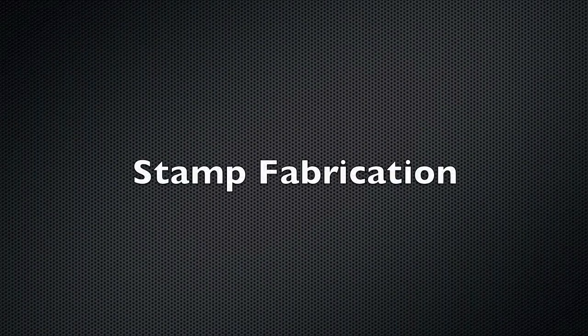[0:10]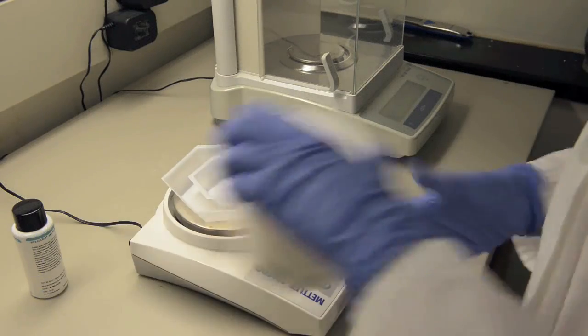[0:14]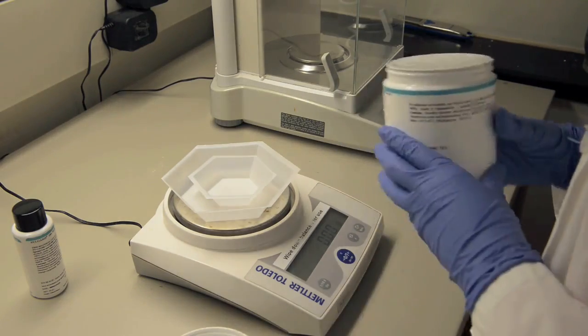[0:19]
Stamp fabrication. Make up PDMS in a 10 to 1 mass ratio of silicon base to curing agent by weighing it in a large weighboat on a digital scale.
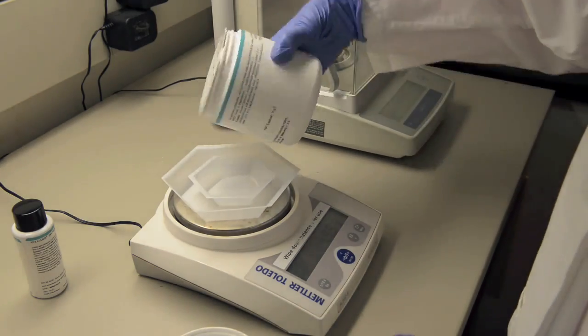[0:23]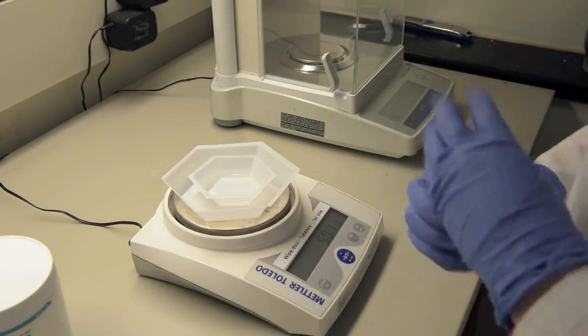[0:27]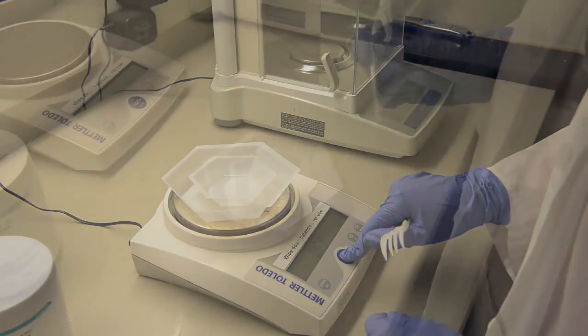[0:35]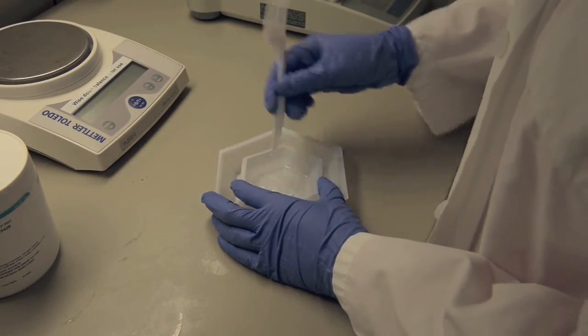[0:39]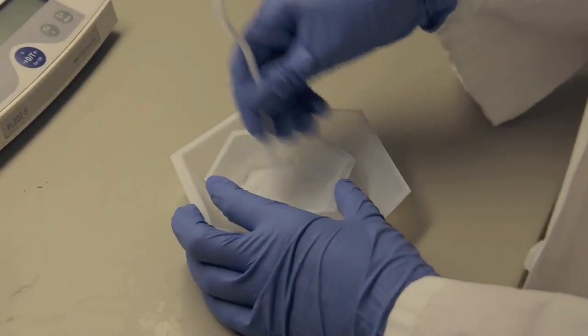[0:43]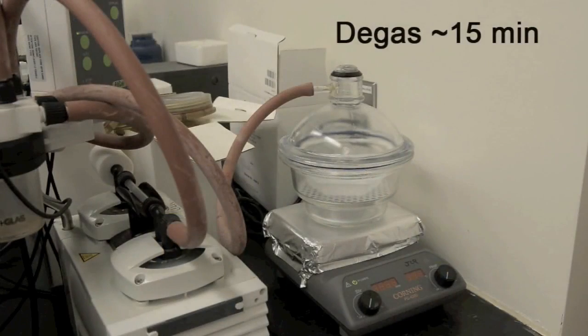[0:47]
Thoroughly stir the mixture until it is filled with bubbles. Then, place the mixture into a vacuum chamber and degas under vacuum for 15 minutes or until all bubbles have disappeared.
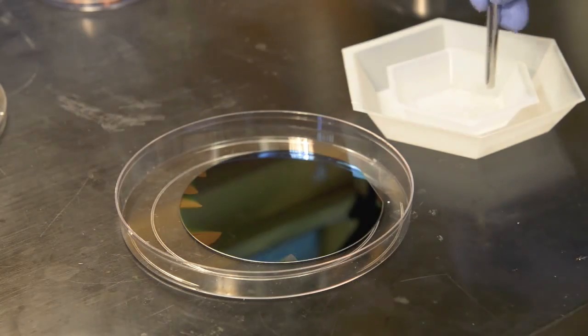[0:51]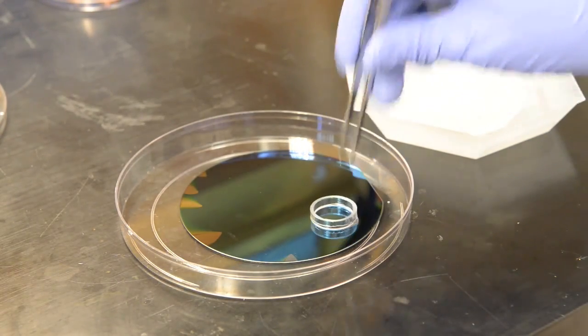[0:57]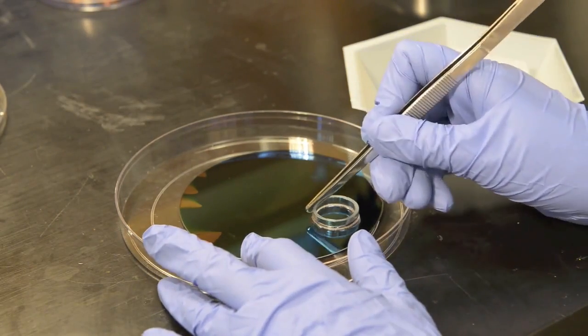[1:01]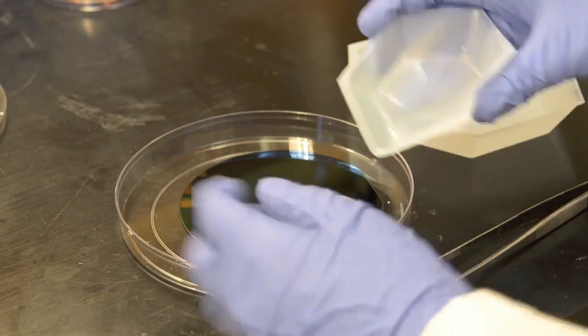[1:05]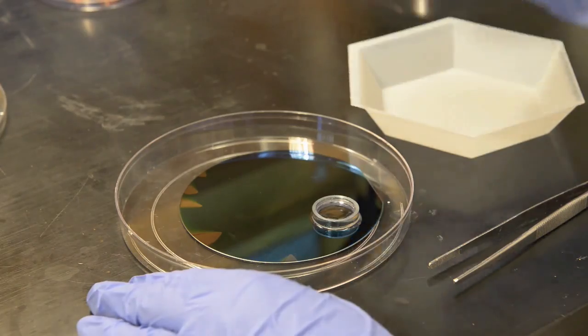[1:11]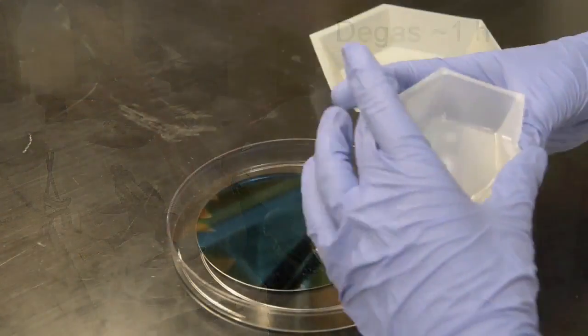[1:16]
Dip a plastic ring into the degassed PDMS to just wet the bottom and apply it with proper positioning onto the silicon master pattern. Fill the ring with PDMS and return the assembly to the vacuum chamber to degas for 1 hour. Top the ring up with PDMS.
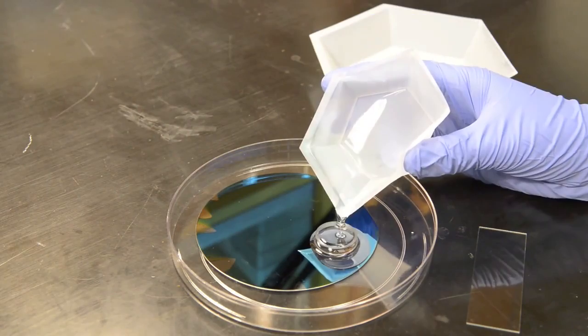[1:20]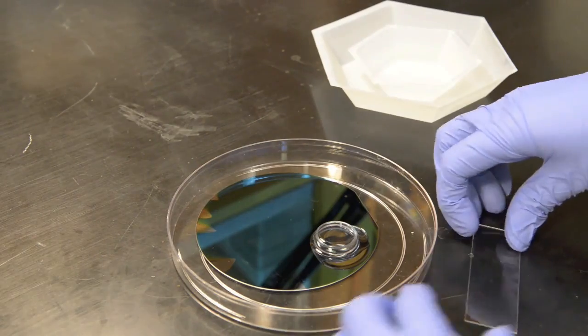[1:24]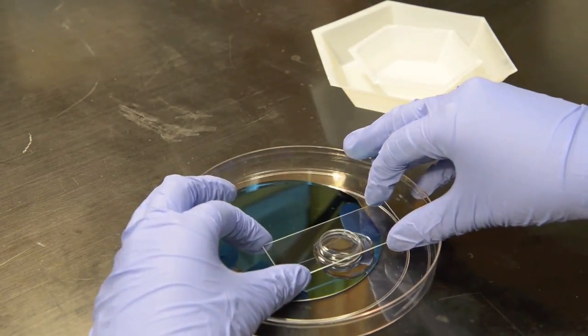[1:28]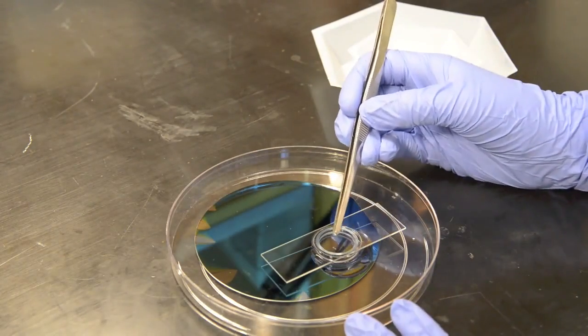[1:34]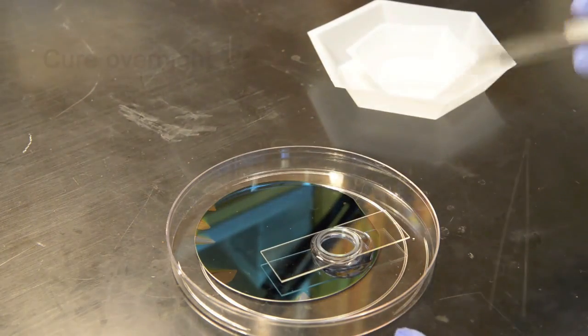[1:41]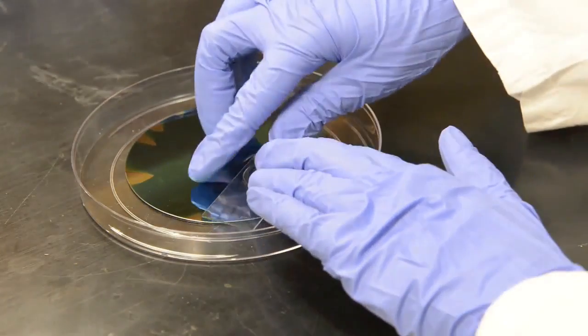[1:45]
Apply a clean glass slide as the backing to the stamp. Be sure not to incorporate any air bubbles. Final positioning adjustments can be made at this time. Cure the assembly overnight on a flat surface.
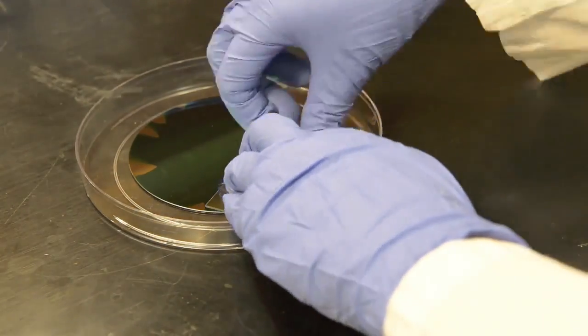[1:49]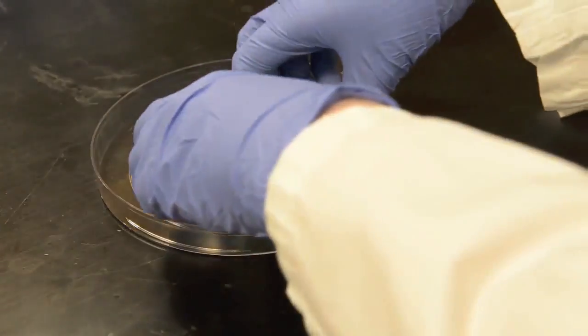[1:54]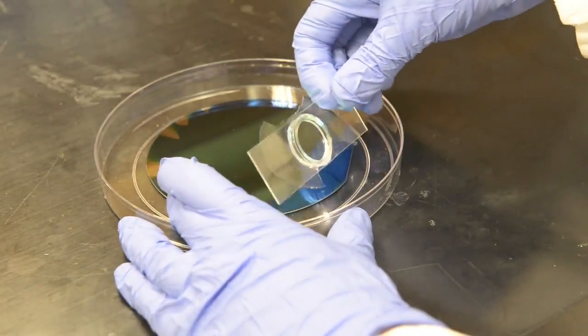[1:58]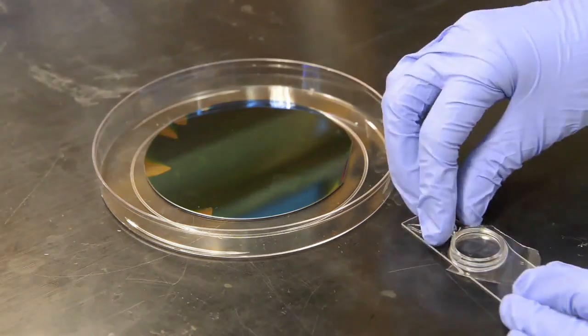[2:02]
Once cured, carefully peel the excess PDMS from the wafer. Remove the stamp and be careful not to scratch the patterned area on the wafer. Using a razor blade, cut the PDMS around the ring to release the stamp.
Apply pressure to peel the ring from the glass slide backing. Push the stamp out of the ring. Remember to leave the patterned surface of the stamp untouched.
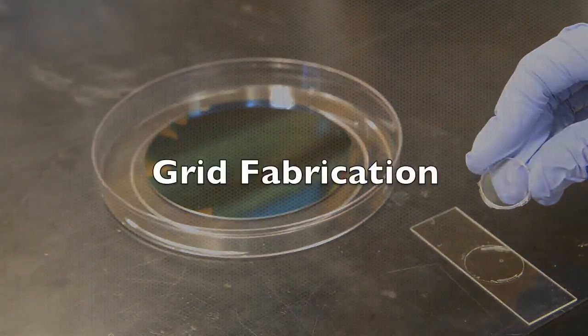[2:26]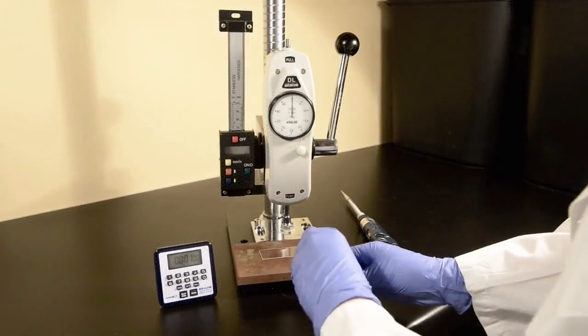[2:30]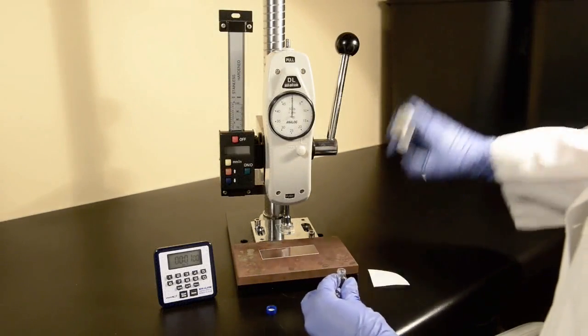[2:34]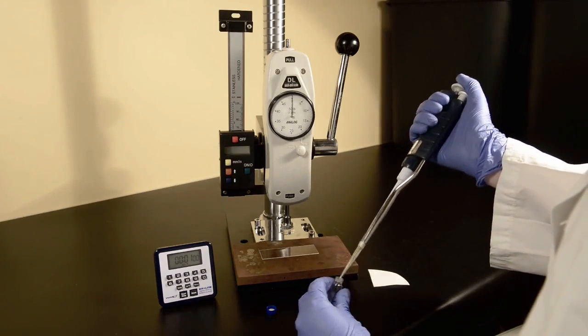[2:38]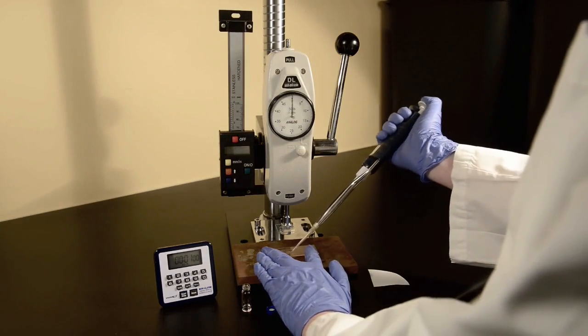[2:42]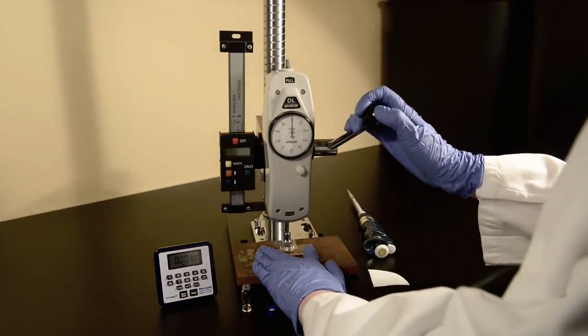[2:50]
Grid fabrication. Pipette and spread approximately 50 microliters of 1% formvar solution onto a glass slide that has been cleaned with ethanol and wiped dry with a Kim wipe. Spread over a circular area equivalent to the stamp surface.
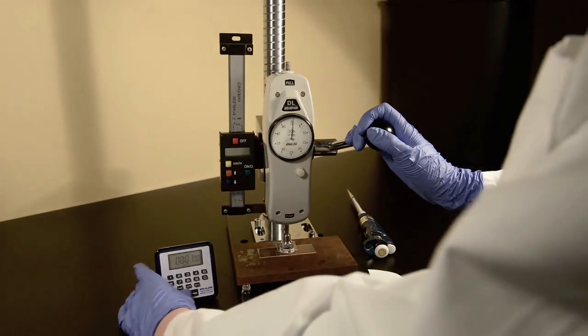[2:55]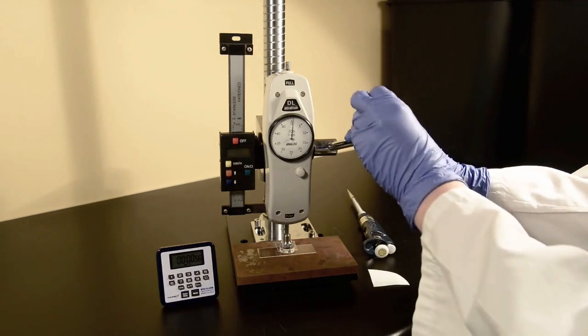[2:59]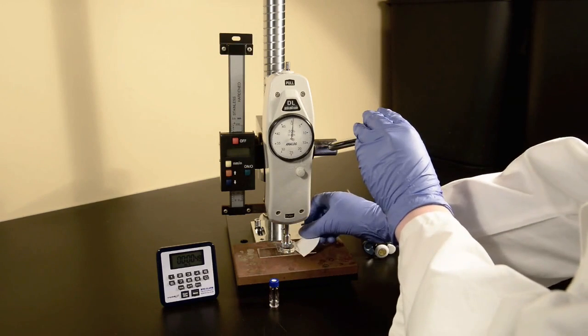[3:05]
Using the hand press, apply 0.5 to 1 pound of force for about 1 minute. Make sure to apply the stamp immediately after spreading the formvar on the glass, as the solvent will start evaporating right away. Dab away any excess plastic solution with filter paper.
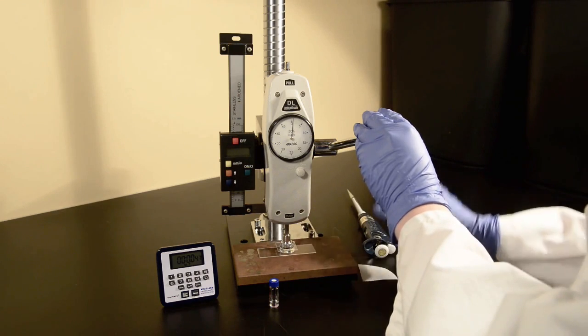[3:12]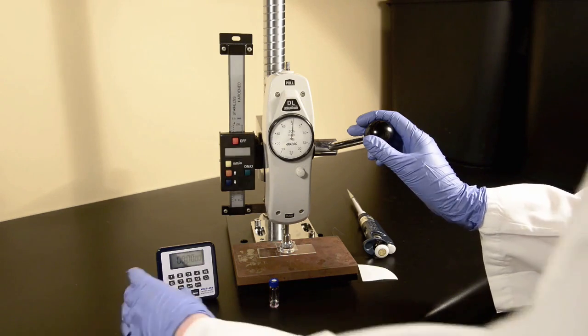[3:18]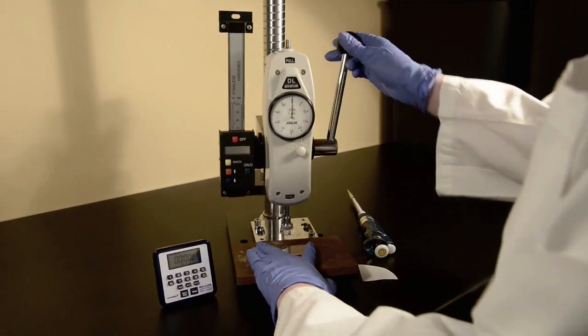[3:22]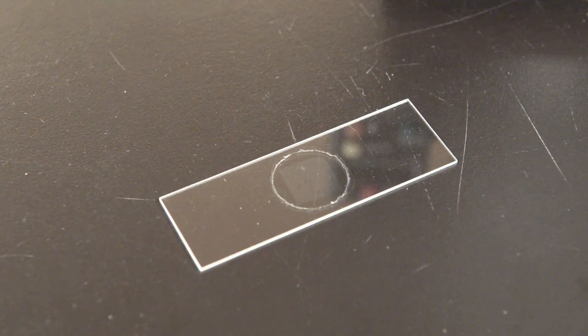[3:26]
Ensure the glass slide is secured while releasing the stamp to minimize smudging of the pattern. Inspect the full area of the formvar pattern using a light microscope. Check for pattern smudging or irregularities. Holes should be uniform and distinct across the majority of the pattern, as seen there.
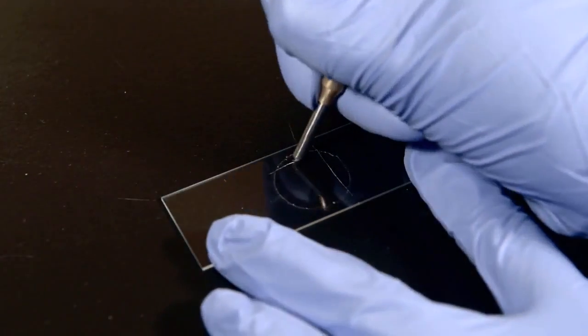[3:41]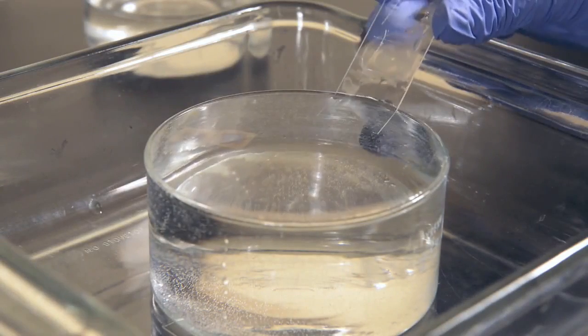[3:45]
If the pattern film is good, score the edges of the patterned area. Breathe onto the glass slide and float the film onto the surface of water in a glass crystallization dish. Repeat this whole process as necessary until there are enough high-quality formvar films on the water surface.
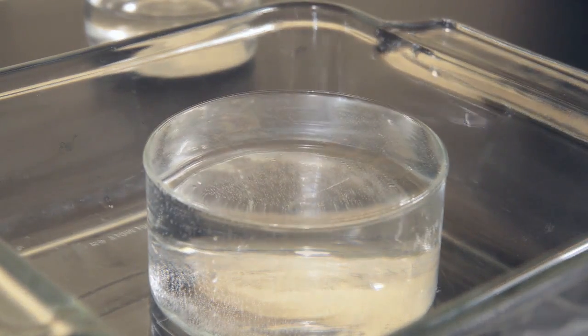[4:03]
Place copper rhodium mesh grids, copper side up, onto the floating films. Be sure to use only very flat grids. 9 grids can fit comfortably on one film.
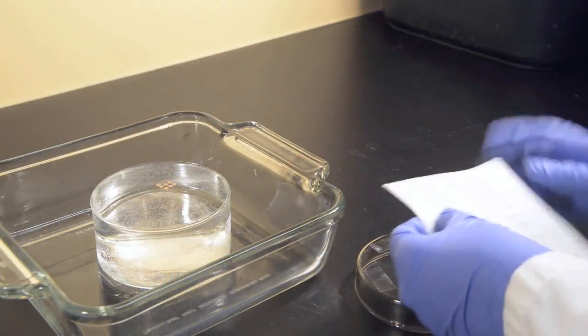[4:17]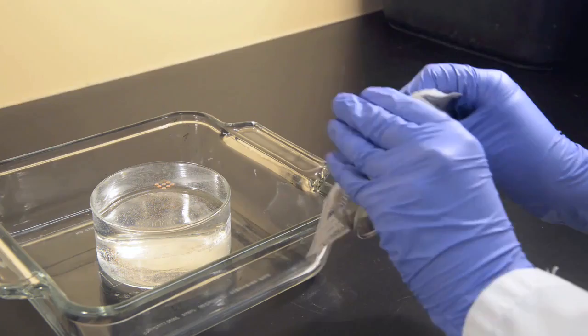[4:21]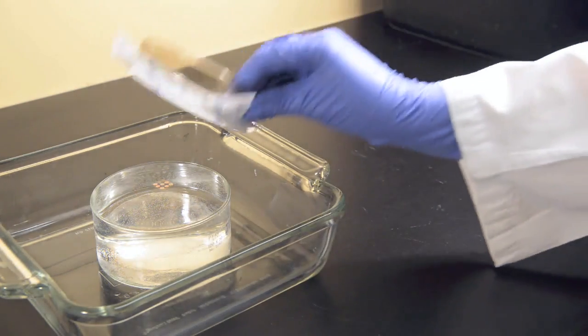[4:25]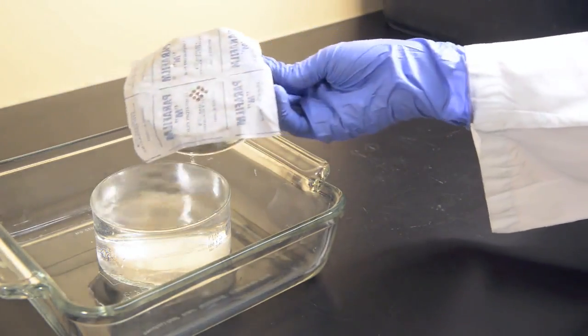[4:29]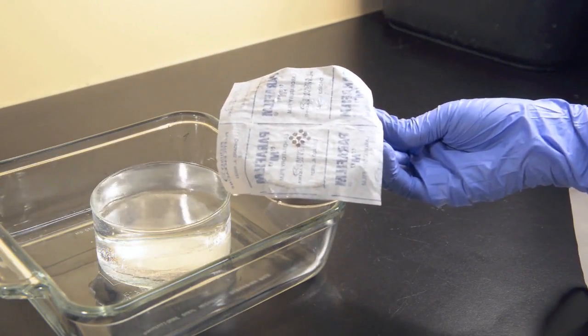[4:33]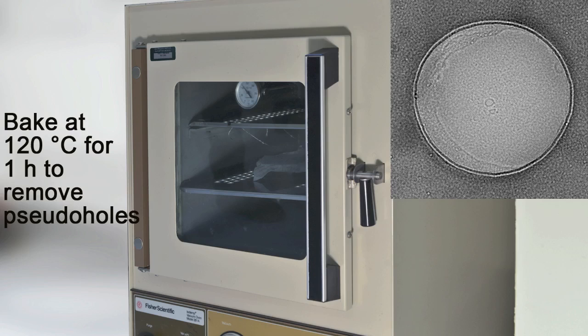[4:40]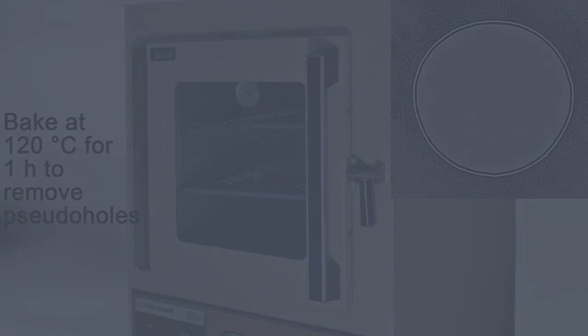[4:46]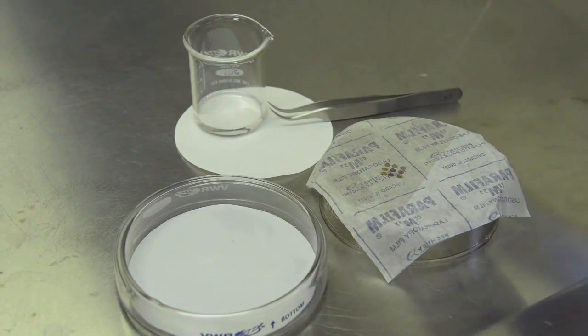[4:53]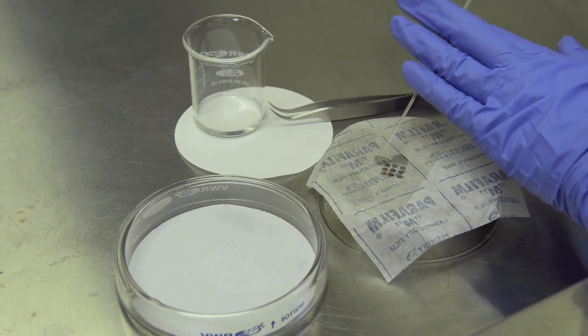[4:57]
Quickly evaporate carbon directly onto the setup with the grids. Carefully rinse the grids with chloroform in a fume hood 1 to 3 times until the grids easily come off the parafilm backing paper.
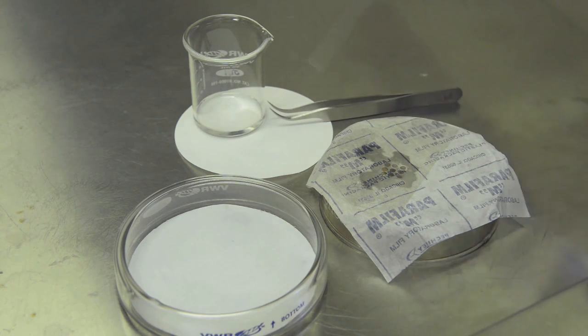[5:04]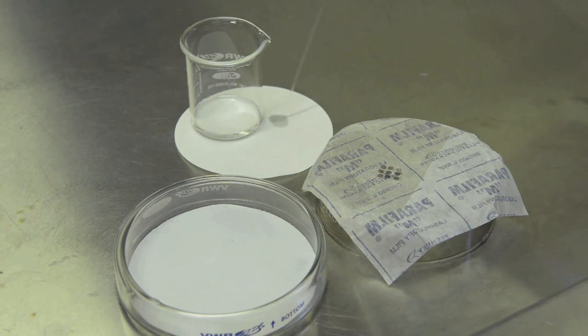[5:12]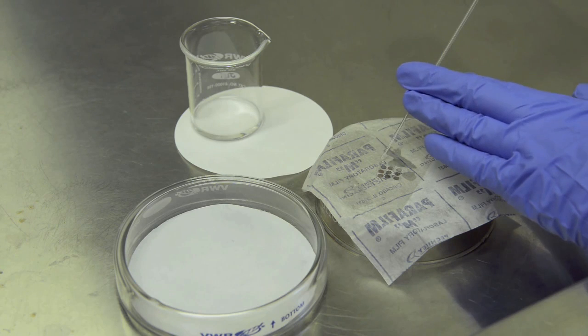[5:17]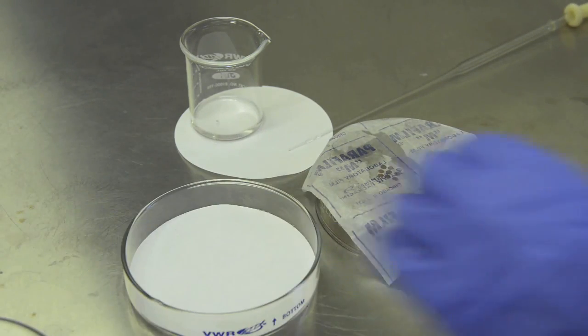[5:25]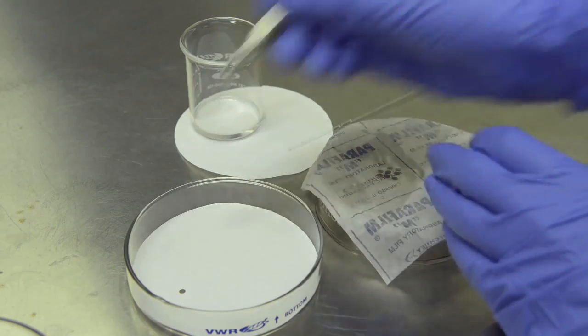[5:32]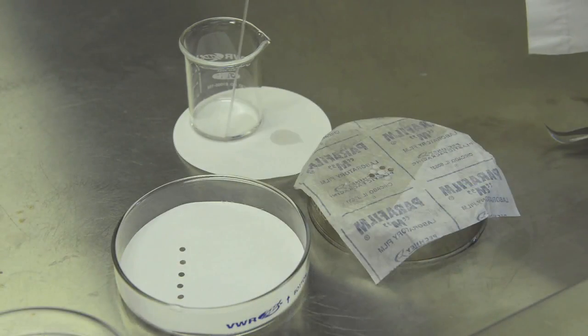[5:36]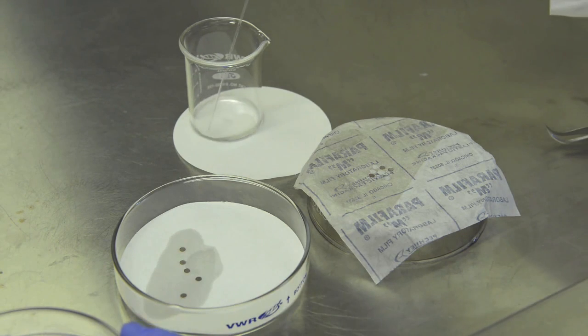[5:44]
Transfer the grids to a clean glass petri dish with a new filter paper. Then wash the grids more thoroughly with chloroform, another 3 to 5 times by soaking the filter paper surrounding the grids.
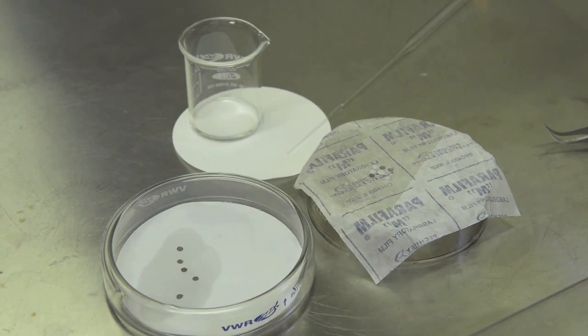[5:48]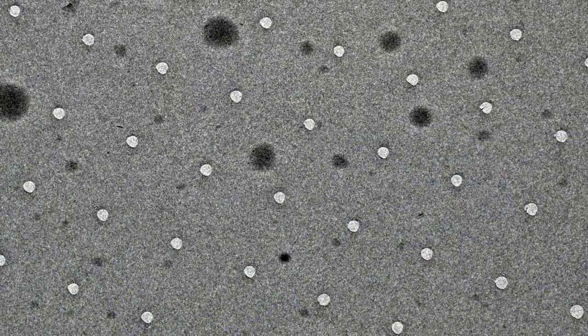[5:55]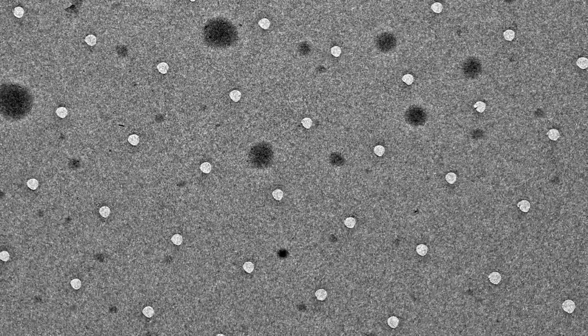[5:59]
Screen the completed holey-carbon grids using a light microscope. The final product should look like this.